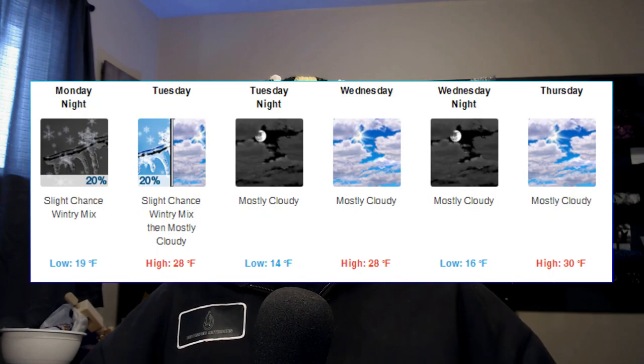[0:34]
Let's talk a little bit about safety, because I never do that. And safety's third, right? Safety. So it's important when we're doing these projects. We do a lot of this kind of stuff, like the plastisol and epoxies and urethanes and stuff.
And I never really take into account some of the ventilation issues, mostly because I can do that out in the garage. I can open the door. I can have a lot of good through venting all the time during the summer, spring, and fall. Problem is, we're in winter now. I'm in Wisconsin. It's 30 degrees out right now, and it's routinely 10 degrees or sub-zero.
So out in the shop, none of my stuff can stay out there during winter. It freezes. You can't paint in that weather. Obviously, it never dries. So what we're going to do today is we're going to build a fume hood downstairs in a workshop, so it's climate controlled. We're not going to do that really now. I'll show you things that how I built, because we already did it.
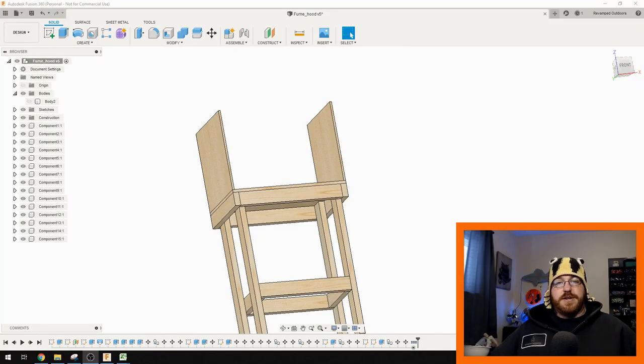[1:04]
So the first step is to determine what you want to do. What I want to do is I want to ventilate my workshop downstairs so it's warm. And to do that, I'm going to build this cabinet, and I'm going to use a range hood. Range hood is just something you put above your stove. You can usually get them for pretty cheap.
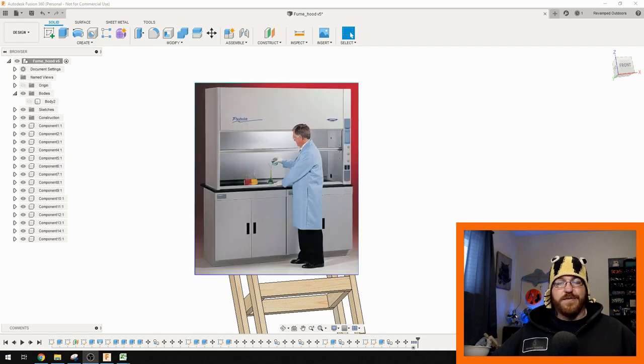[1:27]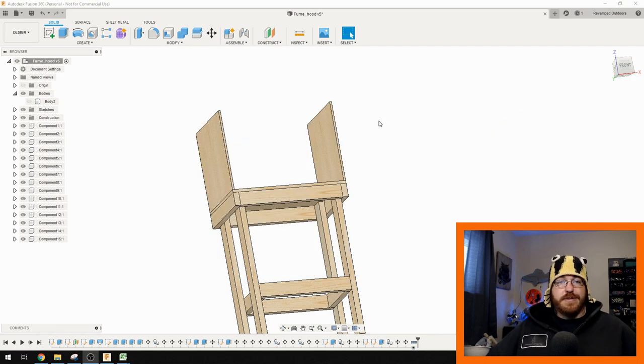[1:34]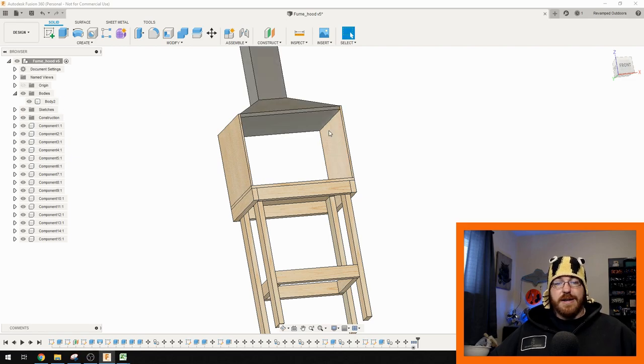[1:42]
Disclaimer here, this is not going to be a traditional fume hood. This is going to be just a fume extraction cabinet. Fume hoods, like chemical fume hoods, are pretty expensive. Way above my pay grade, considering I don't get paid for this, just doing it for fun. So what I'm going to do in typical fashion for this channel is I built a cabinet around what I thought I was going to buy.
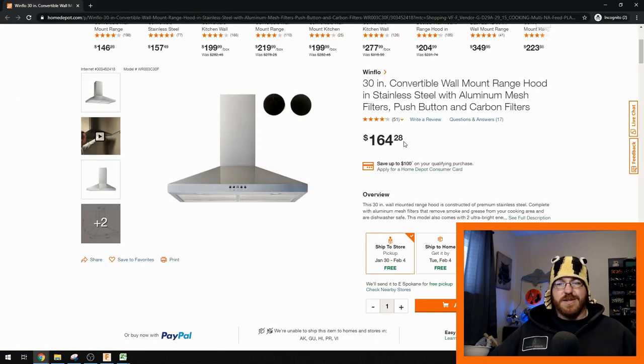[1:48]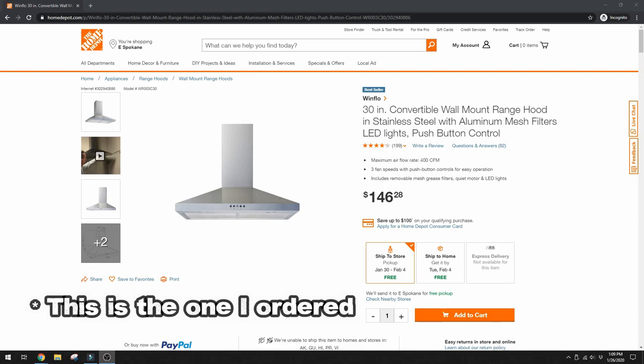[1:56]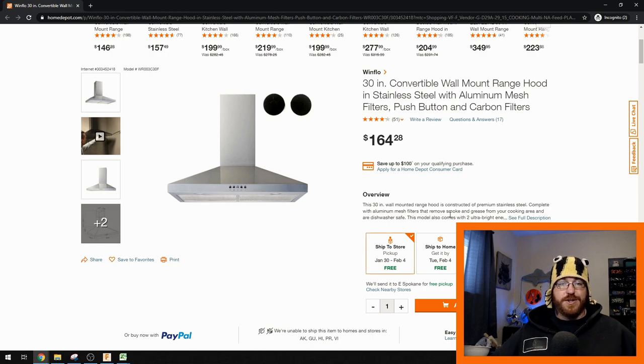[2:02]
A Winflo just from the Home Depot. I'll show you that now. This is at 164 here. You can get it for a little bit cheaper than that. I got it for like 130 at the time. That was about a month ago. This is 30 inches wide. It's got a 400 CFM fan on it, which is pretty awesome. If you know anything about range hoods, usually they're in that like 200 CFM thing.
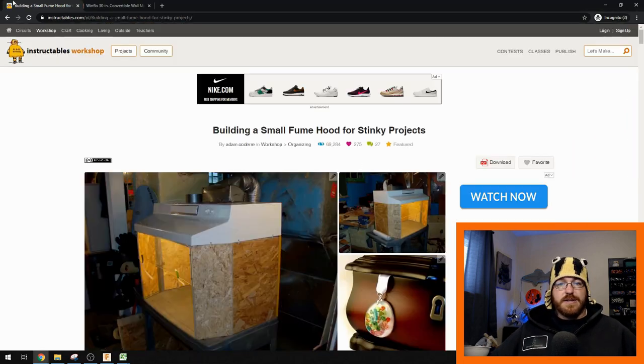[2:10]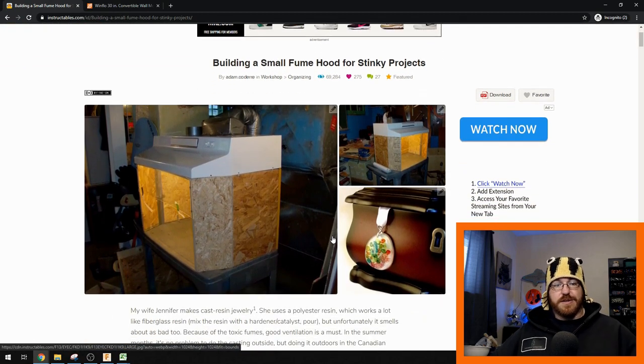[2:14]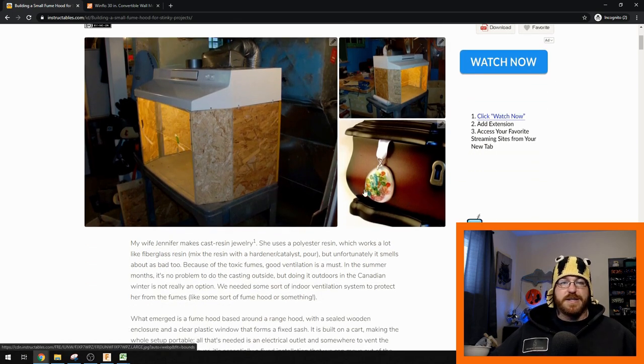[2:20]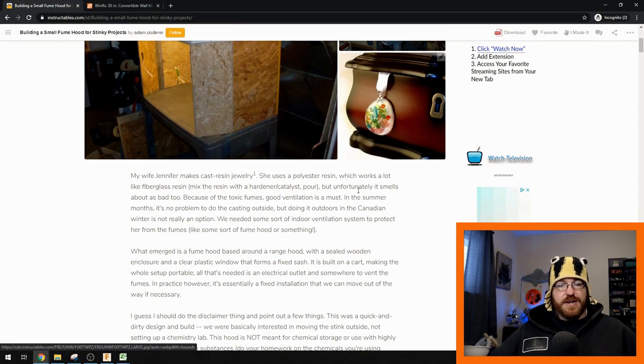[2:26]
You can look online for instructables on how to do building fume hoods, something like this. This instructable is really amazing, actually. He took a small, kind of under cabinet fume or range hood, turned it into a fume hood because his wife makes this epoxy jewelry. They didn't want the fumes and they couldn't do it outside, etc., just like I did. I used this as kind of like a scale model of what to do.
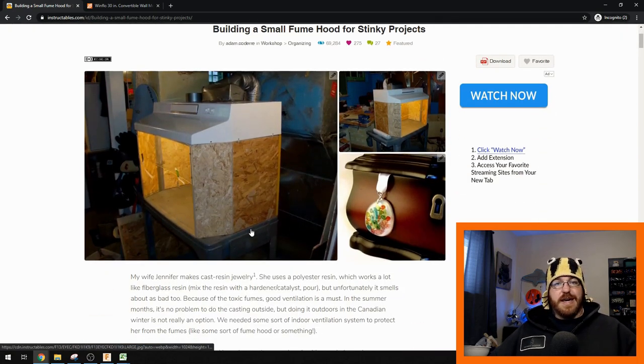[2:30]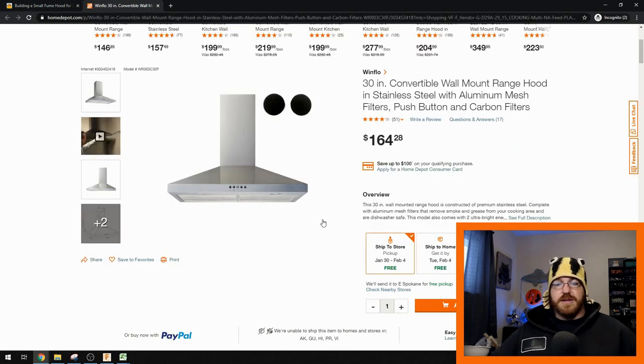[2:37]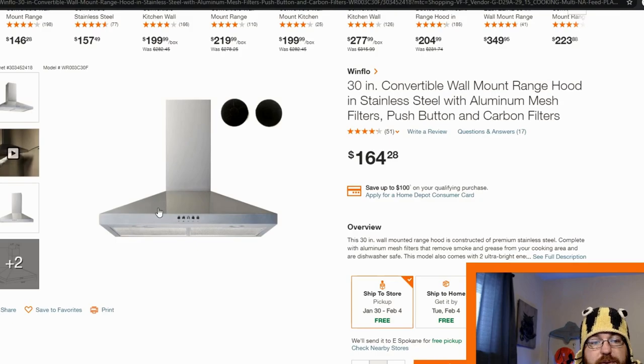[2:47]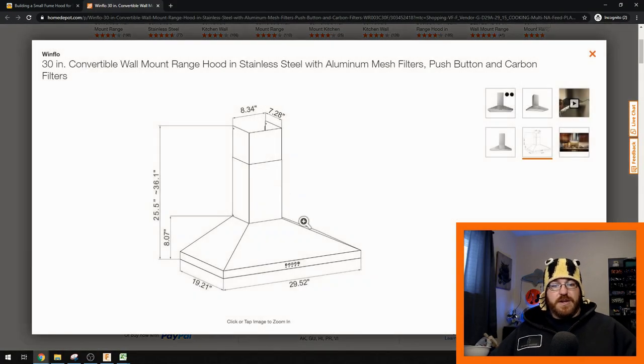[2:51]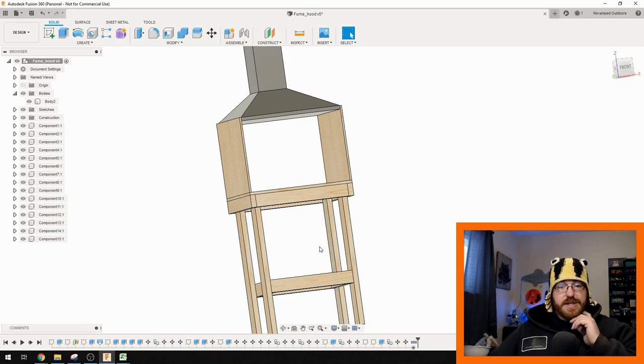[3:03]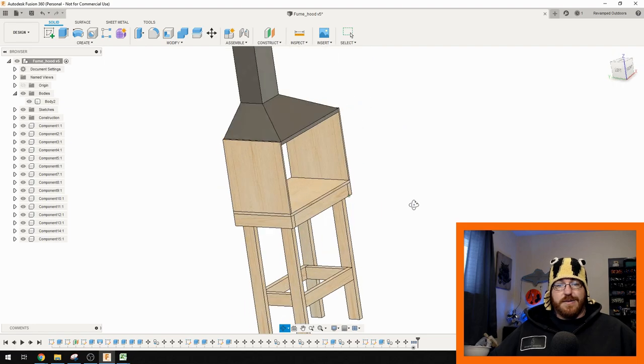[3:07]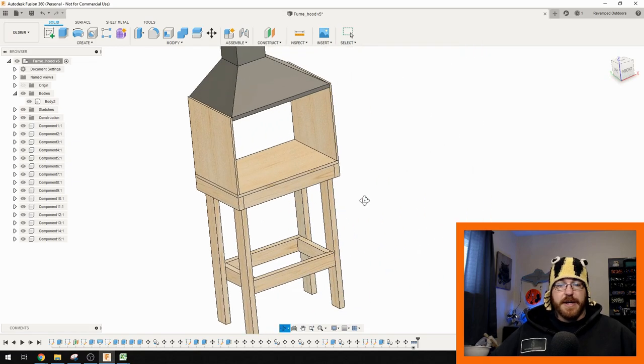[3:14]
I can design and build this cabinet before I even get the range hood. That's where Fusion 360 comes in. All this is just basic sketches. This is kind of how I wanted it to work. On the final design, I had a piece of plywood on the back here just to make it a little bit easier to seal up. But that's all I did with this, you know, just come through here, made these 2x4s, made these half-inch plywood here and 3/4-inch plywood on the top.
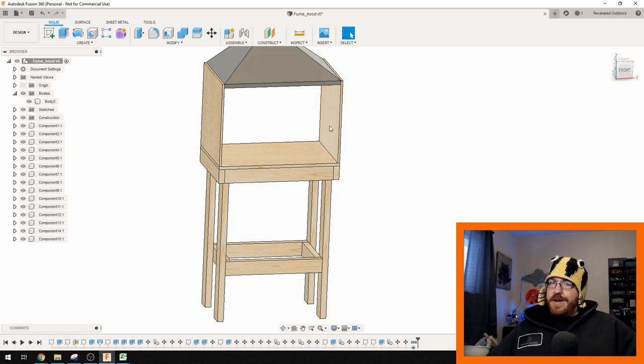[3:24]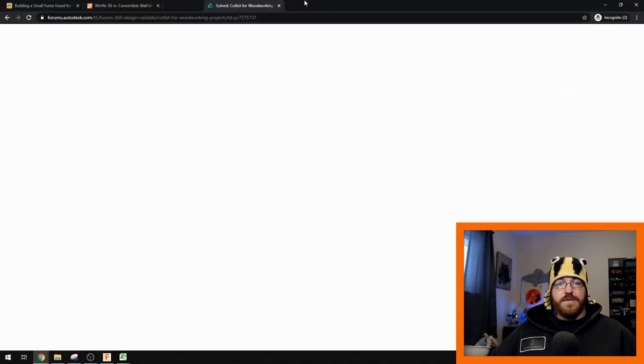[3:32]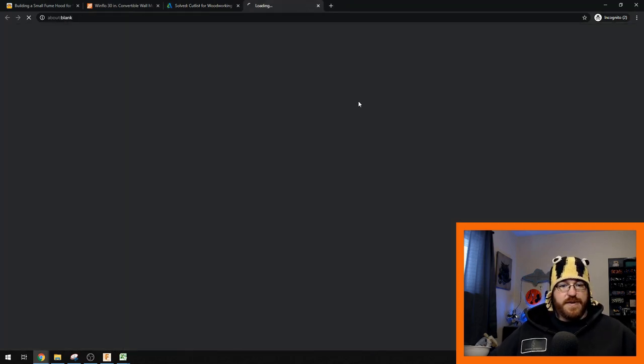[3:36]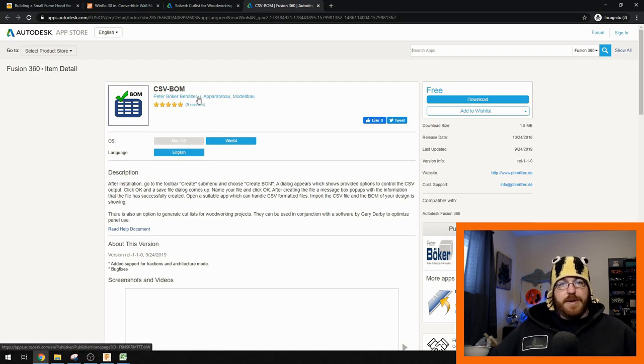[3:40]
Then I was thinking, well, I got all this set up in Fusion 360. I wonder if there's a way that we can make a cut list. So there actually is, in fact, a cut list for Fusion 360. And I just searched Autodesk, and you can find it here. It's called CSV-BOM, B-O-M, Bill of Materials, which is another name for a cut list.
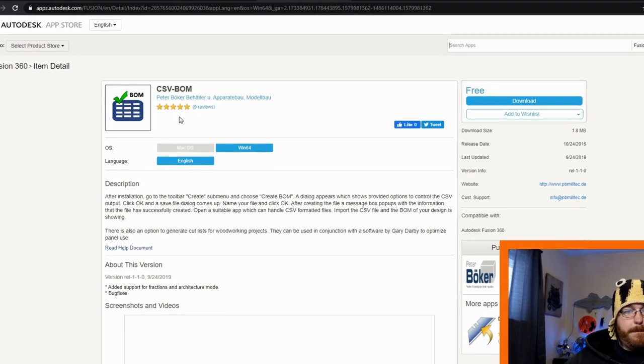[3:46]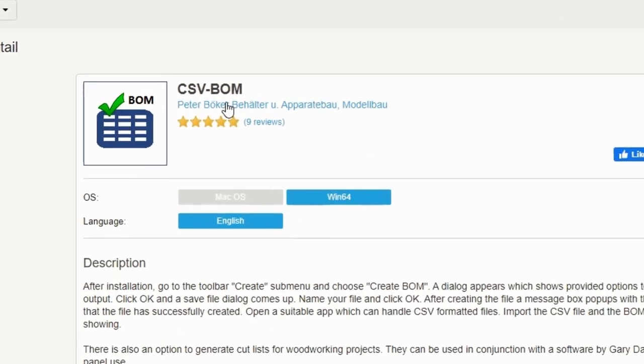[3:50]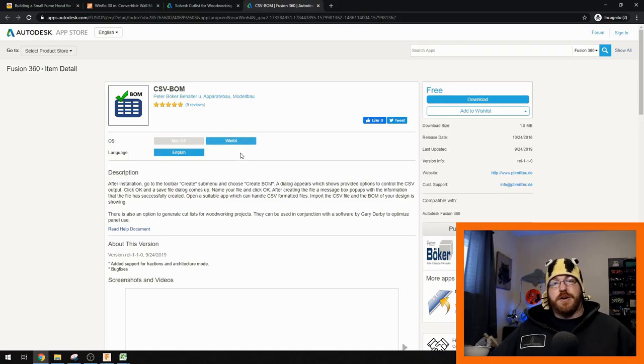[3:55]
This is from Peter Boker Behalter? Boker? Sorry, Peter, if you ever see this. Appreciate your hard work, though. Thanks, Pete. It's a really cool plugin. Works really well. Not a problem at all with that.
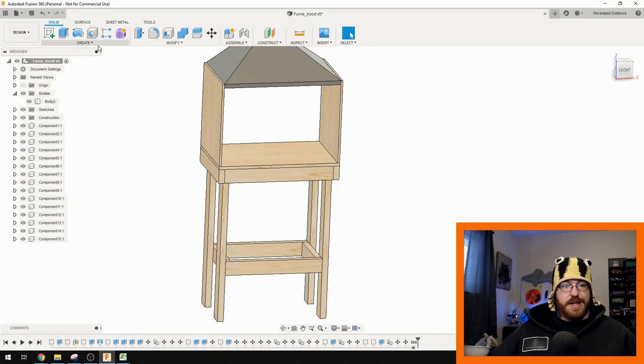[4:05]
All you do is install it into Fusion 360, and then it'll end up giving you another drop-down here. You create that. You say OK. Generate a cut list. Say OK. And then it'll pump out a CSV, a comma-separated values file. CSV is like, from the beginning of time, just something Excel can open. You could use LibreOffice if you don't like Microsoft products and you want a free version of it.
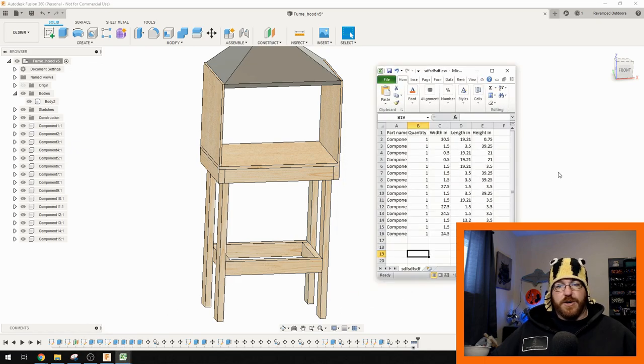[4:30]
But when you open it up, here's how it comes. So Fusion 360 is looking at everything X, Y, and Z, right? So this one and this one are going to be different values because this is long for this one and this is long for this one.
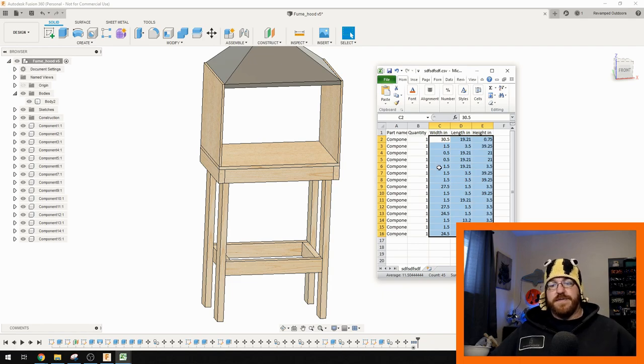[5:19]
I can go through this, find where my 2x4s are, lump those all together, figure out how long I need for 2x4s, go to the store, purchase the lumber. And then what I really like about this is that this cut list is already set up. So when I get home, I just quickly cut these out, done with it. Didn't have to worry about it. Didn't have to triple check all that or try and fit parts together on the fly. This was really nice. Helped out a lot.
Only thing I had to change in Fusion 360 was change the units over to inches because I had inches in my schematic for the range hood. Because we're in America and we like to use imperial measurements because we don't like to do things easily. The cool part about mocking it up in Fusion 360 as well is that I could build that cabinet before the range hood even showed up. So that was really nice.
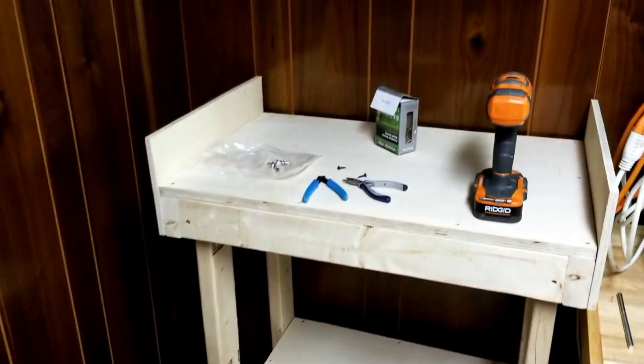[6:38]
I built the cabinet to kind of what I wanted for specs. I wanted to be able to stand up on it, maybe use like a bar stool to sit on it if I needed to, but I wanted it to be nice and comfortable at a high level. So I set it to about 40 inches tall. I know that is pretty tall, but I'm a taller guy and I figure I'm going to be the only one using it. So there you go.
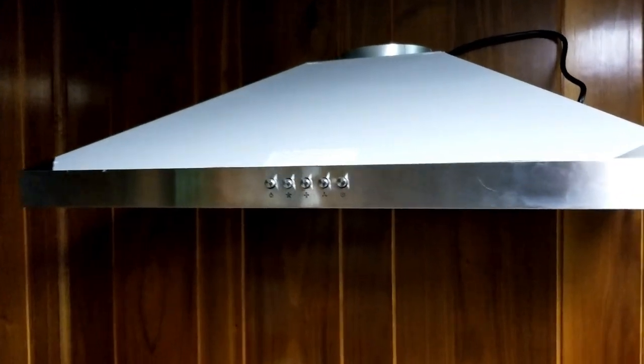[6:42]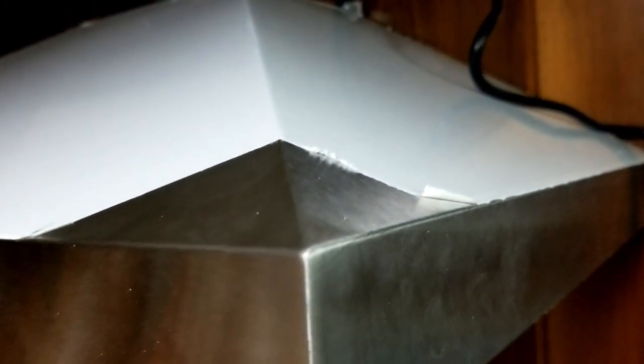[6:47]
Then what I did is I just installed the range hood onto the paneling walls that I have down in the workshop. I set it up to where I'd like it. I put it to where it wouldn't obstruct my view at all. That's kind of important too with this type of project. You want to stand over it and be able to see down clearly instead of having the hood itself get in the way. So you don't want to do this, little hunch over business. Not fun. Didn't want to do that. So set that up to the height I wanted to, put that onto the wall.
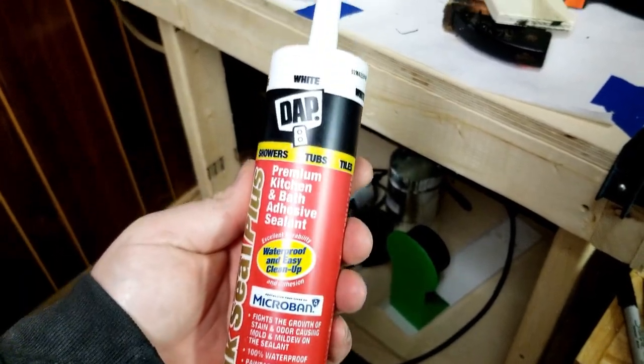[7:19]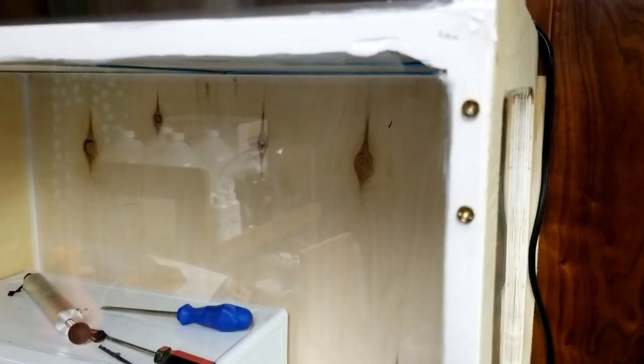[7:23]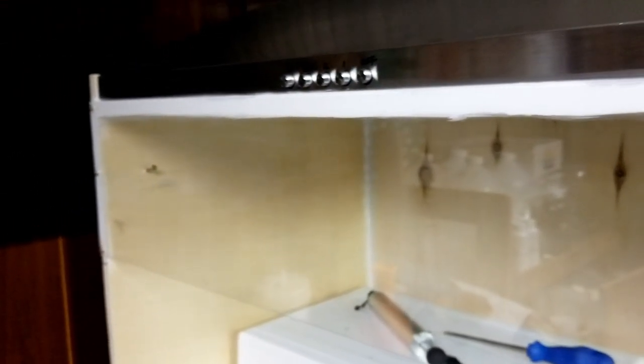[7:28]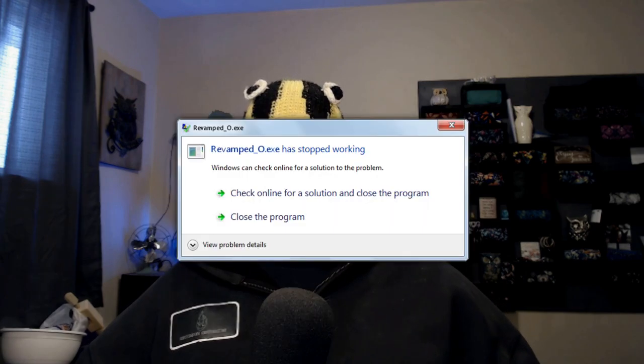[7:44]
Then what I did is I put the cabinet around that and then glued it in. I used an adhesive caulk, a silicone adhesive caulk that you would use for like tile and grouting. So it actually sticks things together pretty well. I put that caulk around the outside of the range hood and it stuck together really nicely, held it with tape for about a day, and then it gets nice and stuck. The cool part about that is I didn't have to drill holes into the range hood at all. It just stayed there with the adhesive caulking.
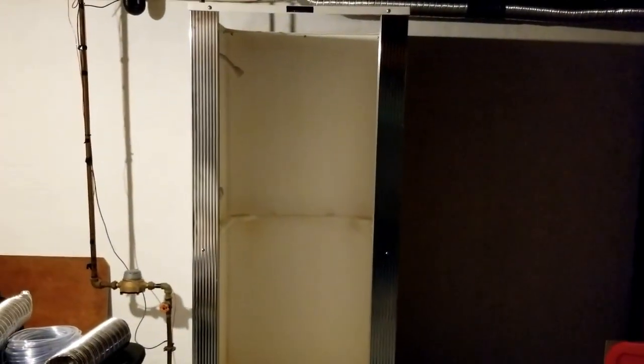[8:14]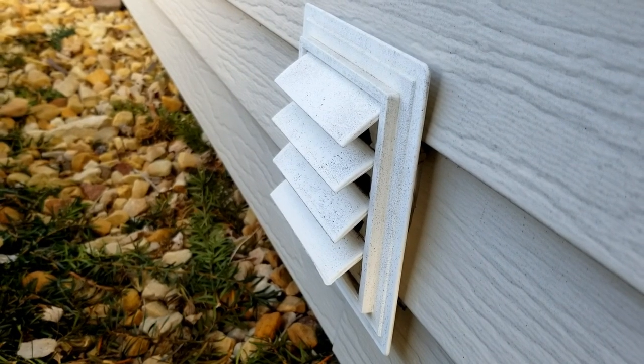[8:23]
Now what we need is a reducer, because when it comes out of the range hood, it's 6 inches. The real thing you're supposed to do with this is directly vent it to the outside. The shorter the run, the better. The problem is I don't want to cut another hole in my house. So what we have is this creepy single stall shower down in my basement for some reason. Not really sure why the previous owner put it there, but we never use it. And they installed a bathroom fan over that shower, and they put the bathroom fan out to a dryer duct that's a 4-inch ductwork.
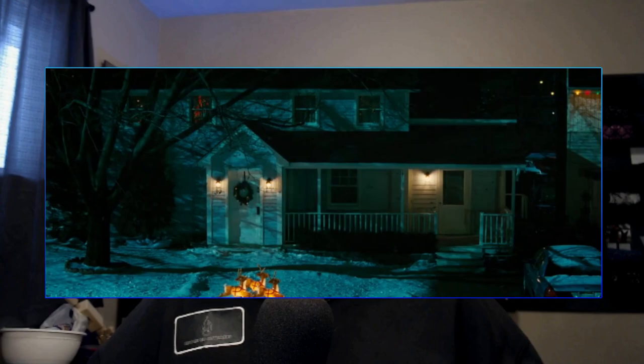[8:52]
So I figured that if I could reduce the range hood from 6 inches down to 4 inches and make that like 9-foot run over to that dryer vent that's already cut in the house, I didn't have to put another hole in my house. I don't know about you, but the less holes in my house, the happier of a person I am. I just kind of feel putting holes in your house isn't exactly the best plan of attack.
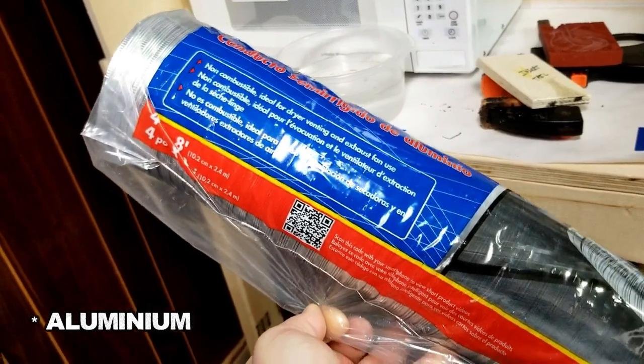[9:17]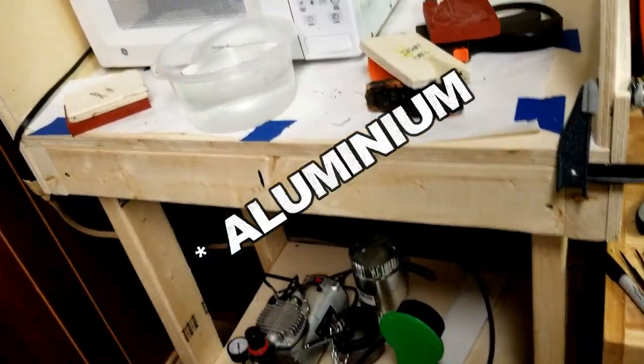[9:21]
I know I'm going to lose about 30%, depending on some of the estimations you read, 30 to 40% of the CFM based on necking it down from 6 inches to 4 inches. But the beauty with that is that I overcompensated with the CFM on the range hood I chose, so I'm at 400 CFM already. So even with the size of the opening, I think we're going to be okay necking it down to 4 inches.
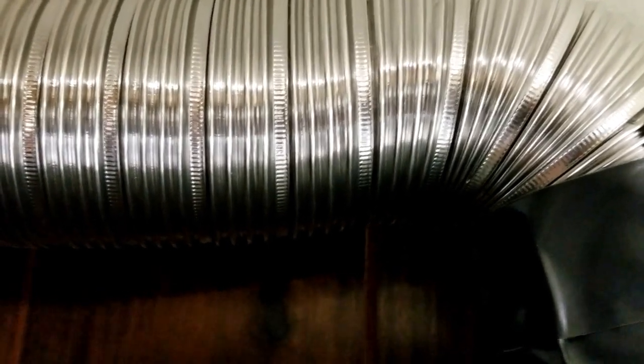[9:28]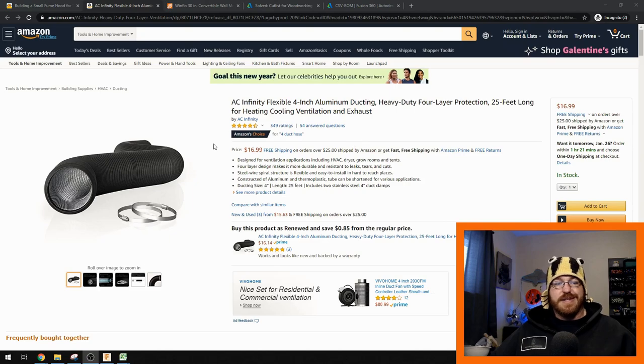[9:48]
I went with a galvanized dryer vent duct. And it's a sleeved galvanized vent. I'm not exactly happy with that ducting. It is nice. It is relatively affordable. And it does go together very easily. It is nice and flexible, so you can get it around different corners. I didn't really take into account the fact that there's a potential for leaking between the sleeved portions. So in the future, I think I'm going to move over to something like this. This has a thermoplastic on the outside, relatively cheap, actually pretty cheap, cheaper than the actual dryer vent itself.
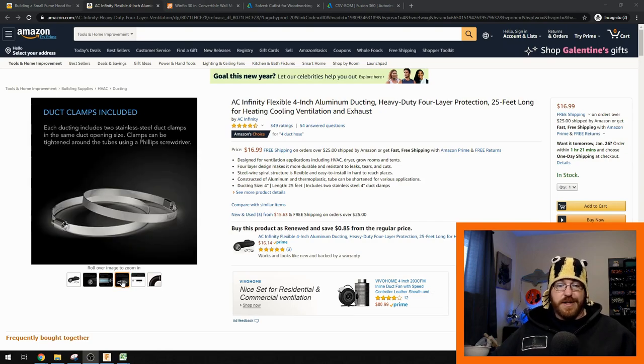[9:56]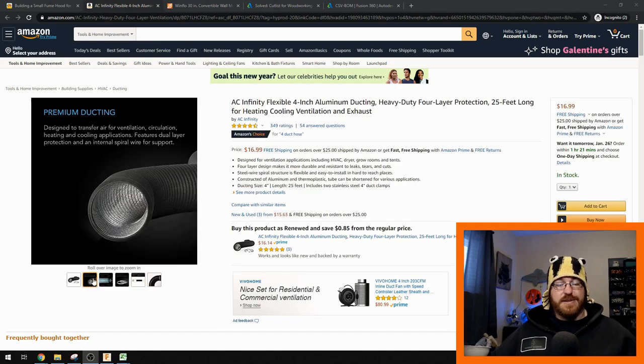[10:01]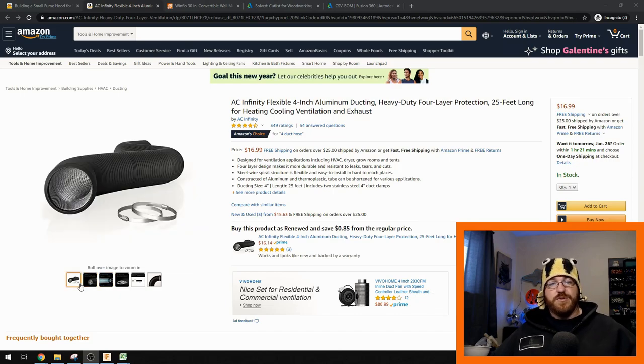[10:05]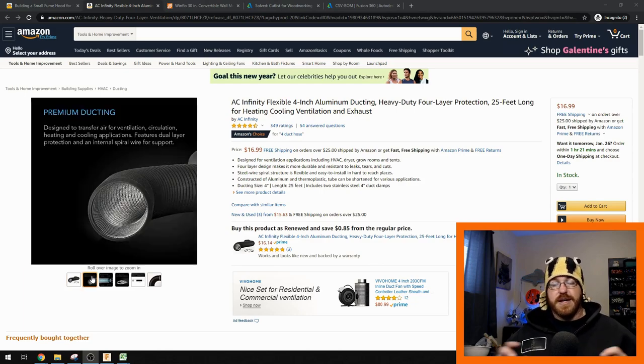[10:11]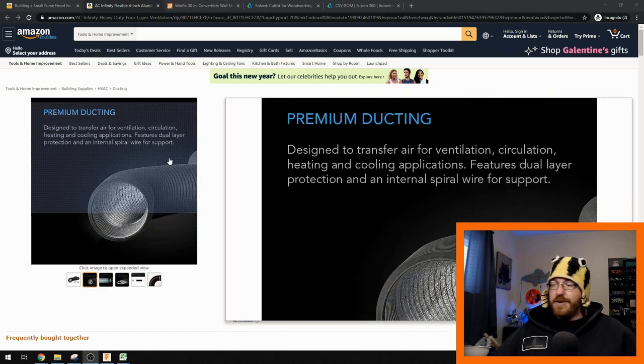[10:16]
Actually, if I look at the price now, it's 25 feet for $16.99 off of Amazon. So this has a thermoplastic on the outside. I know it's going to contain those fumes as they move out to the outside much better than the sleeved together galvanized piping, or ductwork, excuse me. So that's on the list.
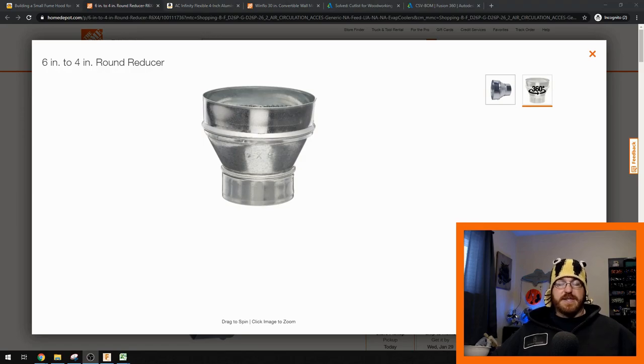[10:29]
I think that's going to happen in the near future, but until then, I'm just running the basic galvanized steel ductwork, and it's working pretty well now. I've tested it a few times. So then we have 6 inches coming out of the range hood, and all I did was use one of these 6-inch to 4-inch reducers, and you can obviously tell this is airtight.
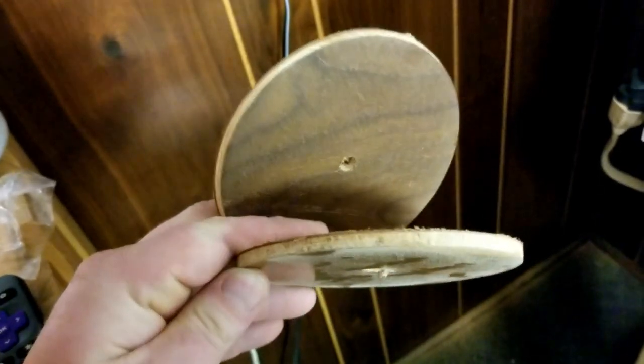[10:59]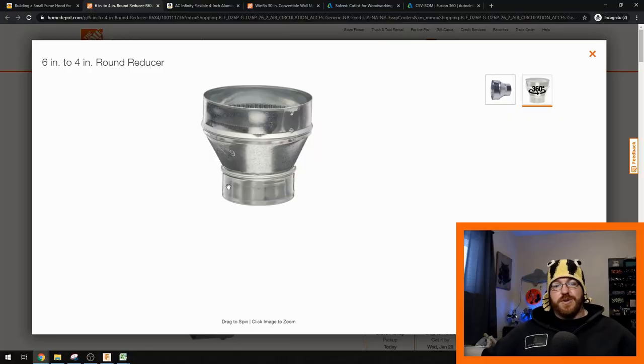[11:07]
So what I did is I used some good, strong duct tape, some T-Rex tape. I put that around there, made sure I sealed this up really, really well. And then I just used caulking around the outside of the range hood to make sure this was a nice seal to the 4-inch. I ran the 4-inch through the wall. All I did was use a 5-inch hole saw and cut through the paneling wall that I had down there. I'm really lucky that it was an interior wall, uninsulated with paneling, so it was real quick to drill through.
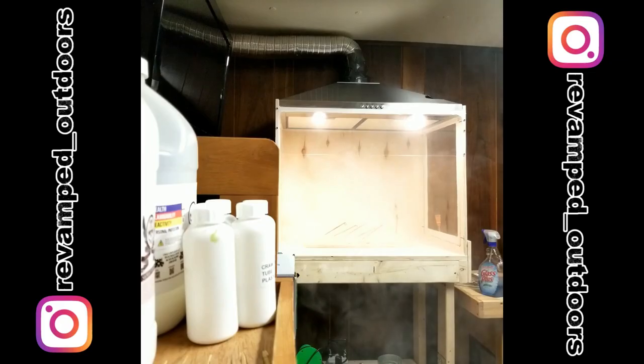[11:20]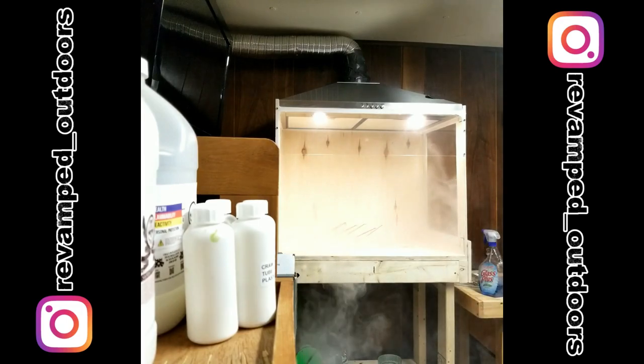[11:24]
What you don't want to do is have more than 3 90-degree bends in your ductwork. I'm running 2 right now to get it to the outside, so I think I'm within that ballpark. What I did for testing is I just bought some cheap incense. I put 5 incense sticks in there at once, let that really build up, and then I turned it on. I also watched it as it was burning and generating fumes inside. I watched that on all 3 of the different speeds.
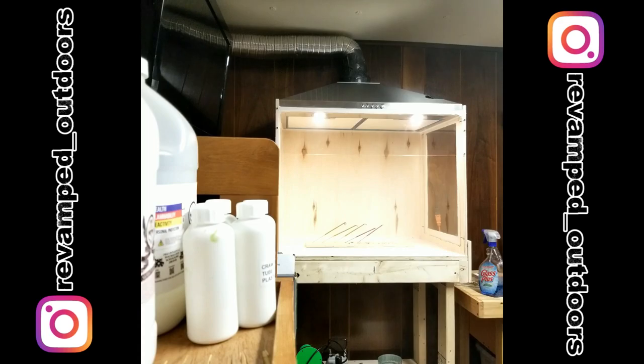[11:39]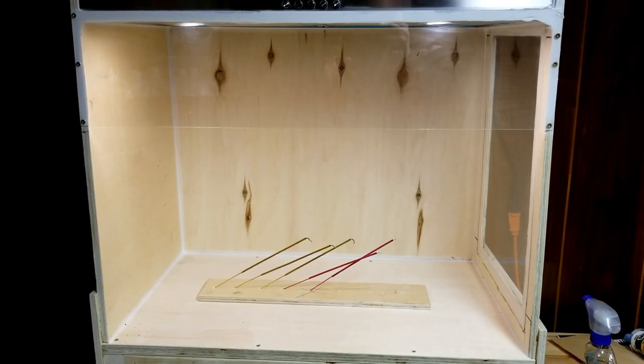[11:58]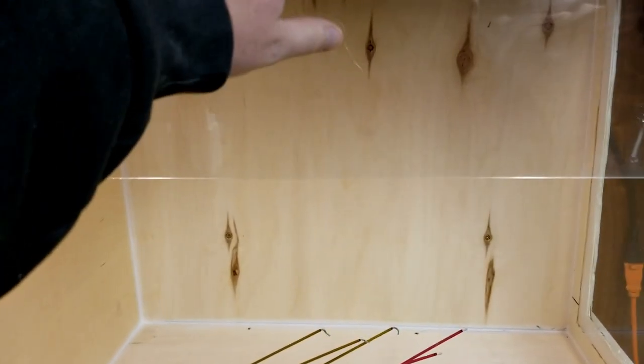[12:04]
All 3 mostly work. I don't think it's powerful enough on one to completely remove as many fumes as I would like. So as I'm actively working in that area, I'm going to have it on 2 or 3 just to make sure that we're moving that air out. It's bringing in the new air from behind me, and I'm not in any danger of breathing in any of those fumes. So for now, it seems to be working well. It took all that smoke and evacuated it really quick.
And then I just wanted to reiterate that this isn't a true chemical fume hood, right? I'm not going to be doing anything really dangerous in here. I'm not going to be using any flammable materials in here for sure, because that fan and all that wiring and everything is exposed to those fumes. So you want to be sure that you can't have a fire in that area. That's also a reason why I didn't go with the 4-inch vinyl ductwork, because I wanted to make sure the ducting could withstand something if something did happen. So that's why that thermoplastic one might be in the works in the future.
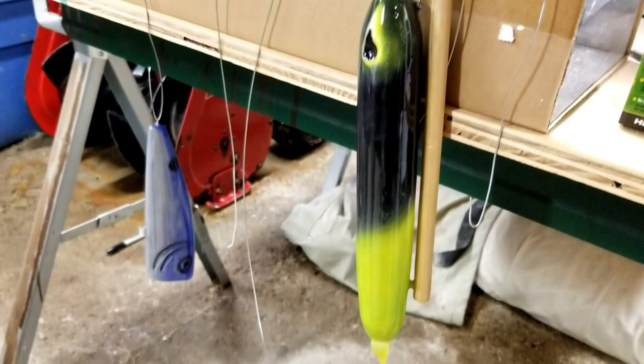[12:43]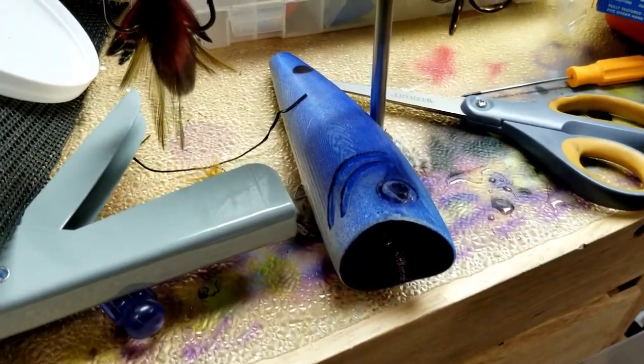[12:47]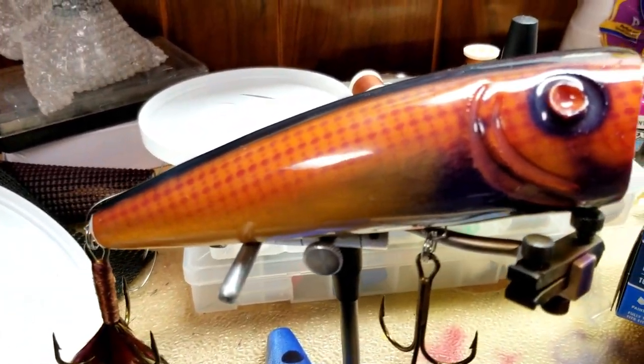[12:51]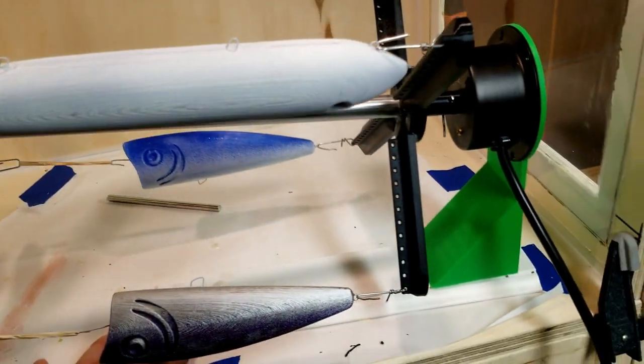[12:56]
But I am making a lot of hard baits now. This is another big reason for this. So I can do soft plastics in the basement now and also do epoxy hard baits. I really am going to start pushing for doing some big hard bait stuff and some integration stuff, so soft plastics with a hard bait body as well.
I hope this was educational for you in some way, shape, or form. I'm not sure how it would be, but you never know. Maybe you're looking to do something similar. If you are, this build was cheaper than I had thought. It's still expensive just to buy all those materials, but you can get away with this thing for like under $300, which is pretty good to keep your hobby going throughout the winter.